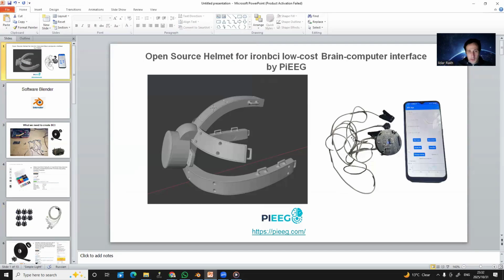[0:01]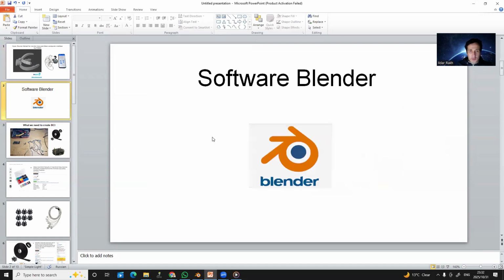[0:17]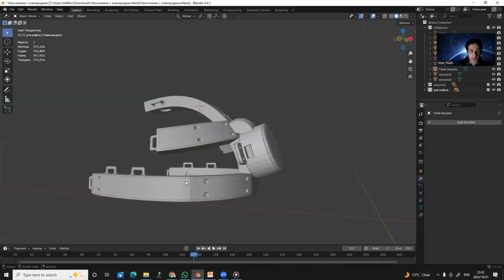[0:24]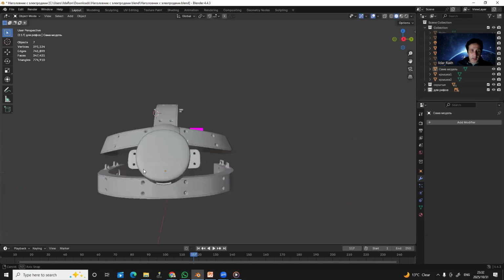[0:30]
So as you can see here, it's our helmet that I presented before for this Brain-Computer interface. It's open source for users of the IronBCI device. Originally it was implemented in Blender software, as you can see here. So let me explain how it was done.
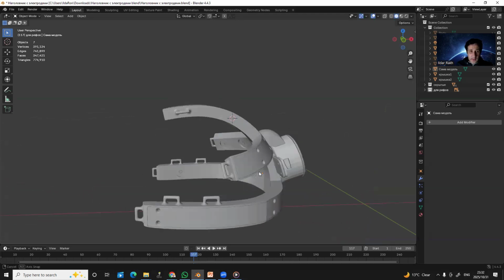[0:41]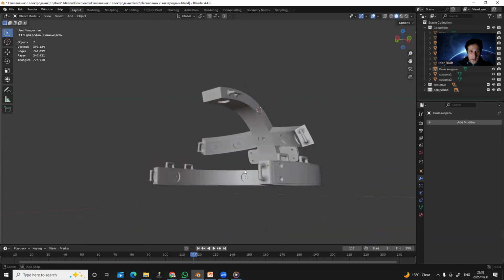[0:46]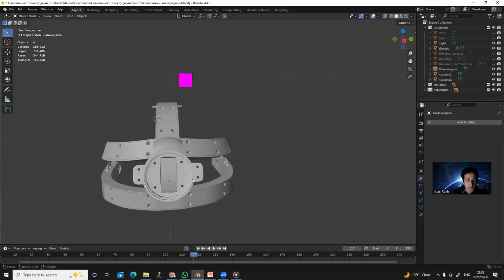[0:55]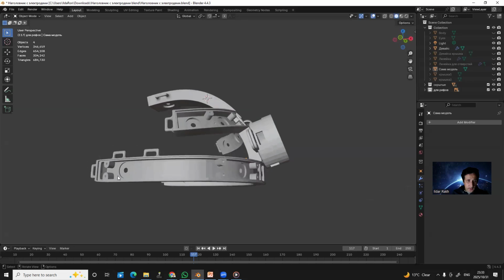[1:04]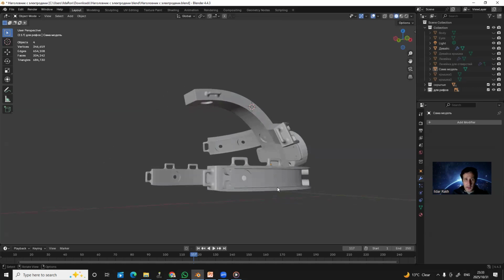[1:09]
The Brain-Computer interface is located in these parts. So you open this head, put the Brain-Computer interface inside, and after that the dry electrodes are already located here, and the connection is already implemented inside. So here it's located inside. And let me remove it. So here are places for cables and for putting dry electrodes inside, and it looks like that.
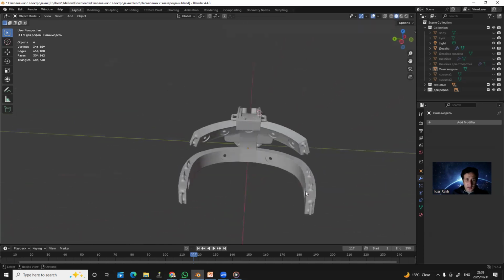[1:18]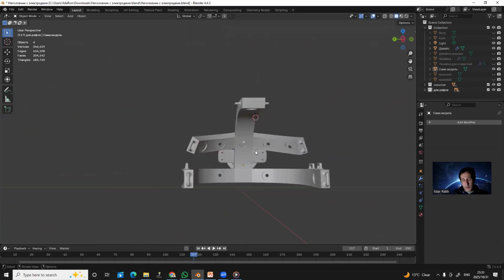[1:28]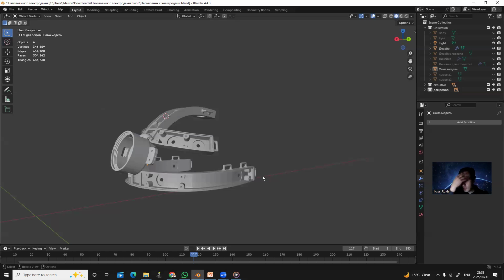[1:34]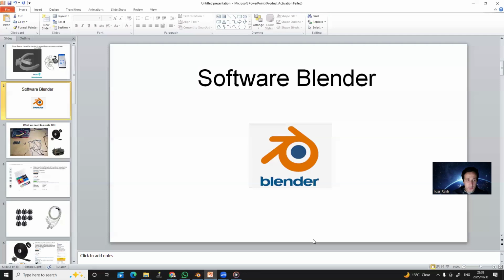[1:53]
These parts, as you can see here and here, are to adjust the flexible design of the headset, especially for the dimensions of your head. For these reasons, it's a more or less universal model. And of course you have every opportunity to adjust or change something, up to you, what you would like to improve or add as additional functionality. As I said, it's open source for IronBCI users.
And yes, of course, I provide sources for the headset, but anyway, we need some additional parts to make a working Brain-Computer interface. Of course, we need dry electrodes, and cables to connect the Brain-Computer interface and the dry electrodes. As you can see, I have used these types and some cables and these materials.
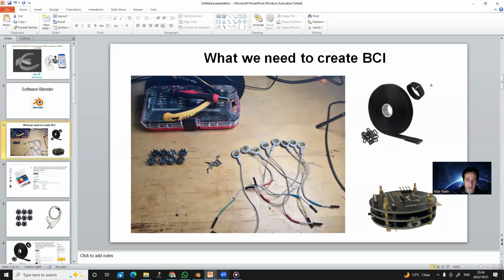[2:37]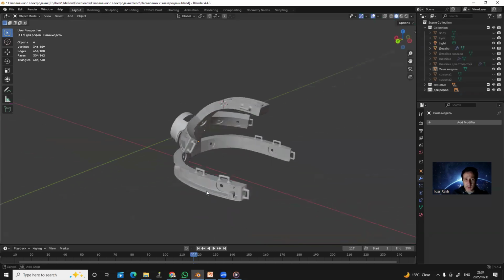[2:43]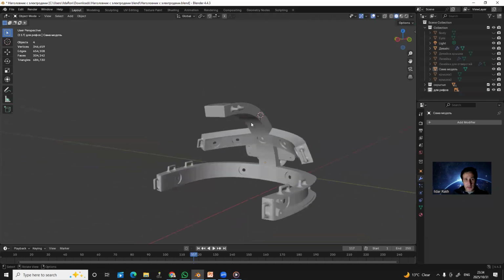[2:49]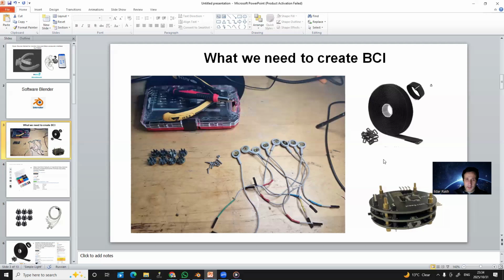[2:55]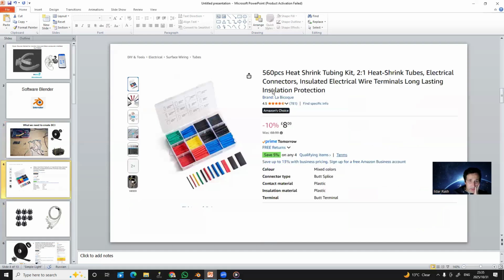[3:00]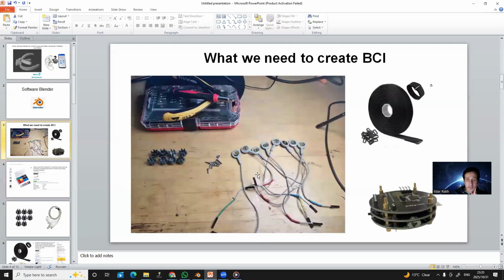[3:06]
Yes, as you remember, I mentioned that we need to have the opportunity to adjust the size of the headset, especially for your head, so it can be done with the next parts, but anyway, it's necessary to have these materials. So the next one that we need is heat tubes. Since it's not easy to find the optimal length for cables that can establish the connection between electrodes and the Brain-Computer interface, for this reason it's something that is necessary to do manually.
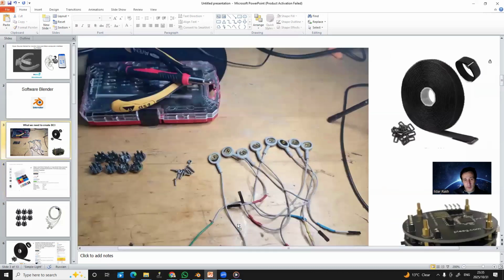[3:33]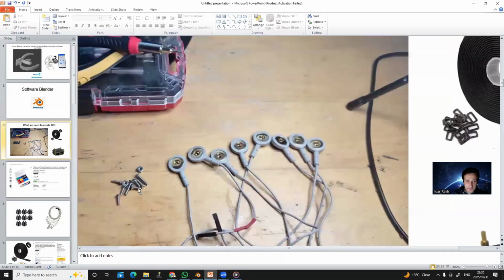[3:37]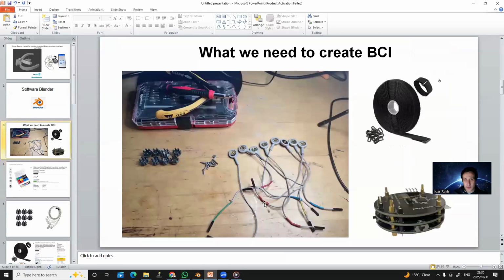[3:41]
I use this cutter, as you can see here, to take cables of standard length, cut them, make them shorter, and connect them manually. Probably here you can see it much more clearly. And use this material to protect it. Only then can you use some heater to fix it.
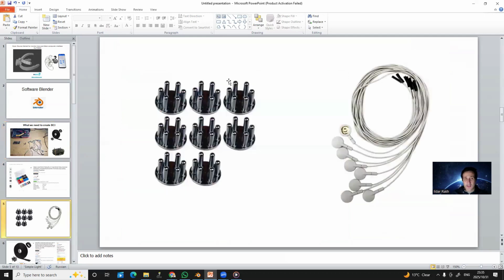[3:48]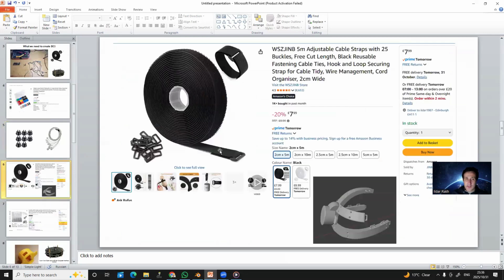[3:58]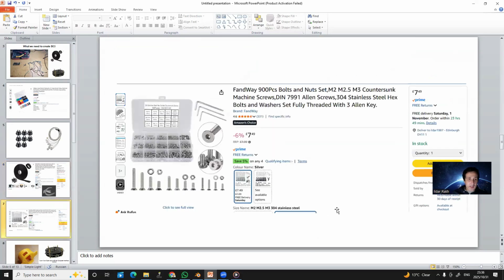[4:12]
So as I said, I used silver chloride dry electrodes and these types of cables to establish the connection between electrodes and the Brain-Computer interface. These cables, as mentioned before, are not so expensive and come in different colors. There are many different types, so it's up to you which ones to use. About which types of bolts can be used here, my recommendation is to just buy and use this kit. It is especially for adjusting and making all the connections, using M2 and M2.5, and also at a not so expensive price, you can find all of them, so you will not have any problems in this case.
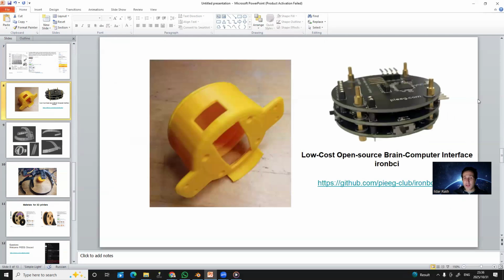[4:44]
So the Brain-Computer interface IronBCI is located inside this part. This holds it, this one, this one, this one, and this one. It's created to establish the connection between the Brain-Computer interface and the headset. So you need to take the BCI device and put it inside through this hole and one hole over here. It's to have the opportunity to turn on the device and also to connect the micro USB cable to charge the battery, a LiPo battery in this case, in the IronBCI device.
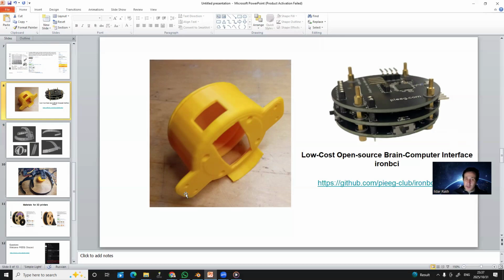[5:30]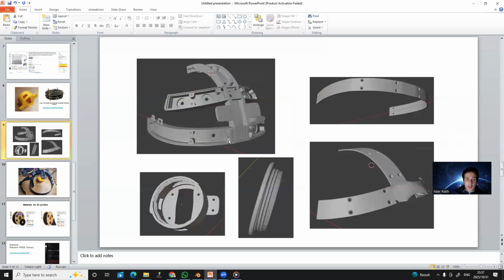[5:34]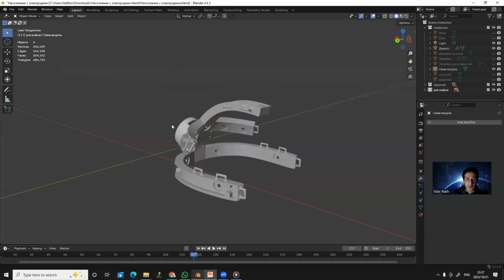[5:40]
So, yes, that's all. But here it became much clearer. It's the same as I showed before in the Blender files, but probably here it's explained much more easily.
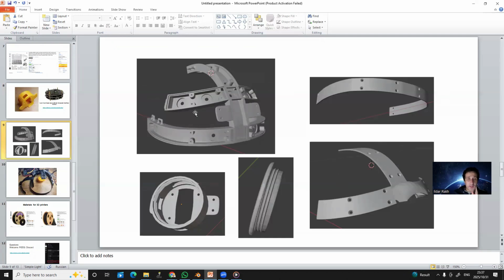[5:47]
So it was created from a few parts. It's mainly this one headset. Of course, it's a little problematic when we use, let's say, flexible materials to print this design on a 3D printer. We need to adjust and provide some flexible parts to have the opportunity to print this design via a 3D printer.
But it can be done. This one part is just a closure. Once it has been printed, you need to put electrodes inside, establish the connection between the electrodes and cables, and from this moment you can print this part and close it. This is possible for this area. After that, put the Ironbci brain-computer interface inside these parts, connect and close, and via the next cap, close these parts and put it over here.
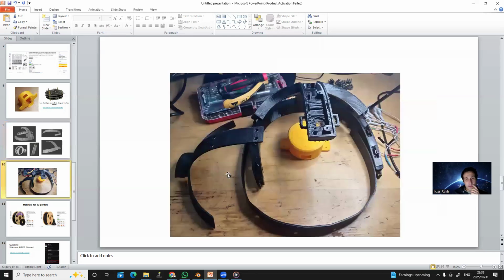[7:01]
So this is physically how it looks in real life, let's say. It was printed. This yellow part is for the brain-computer interface; you need to put the brain-computer interface inside. Here you put electrodes, connect the electrodes via cables with the brain-computer interface, and close.
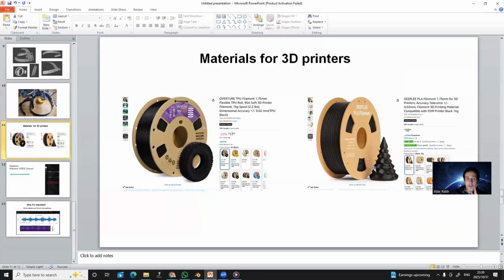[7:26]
So which types of material can be used? Of course, PLA or TPU. It also depends on what you would like to receive, since if it is a hard material, something like over here, and it is not made especially for your head, I created this one for my head, you will have some problem with good connection between electrodes and skin. It's quite sensitive in this case. But with flexible material, it's not so big a problem. So you can adjust. With this hard one, you can adjust probably only 4.2 millimeters, but it's not optimal.
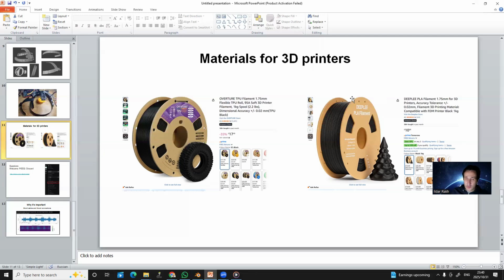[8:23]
So for this reason, you should choose: if you are confident that this dimension of headset suits your head, you can use some hard material. Or if you would like the opportunity to adjust, especially for your head, you can of course use soft material.
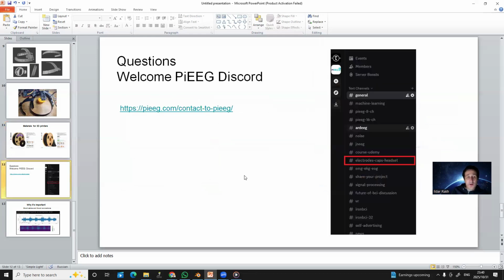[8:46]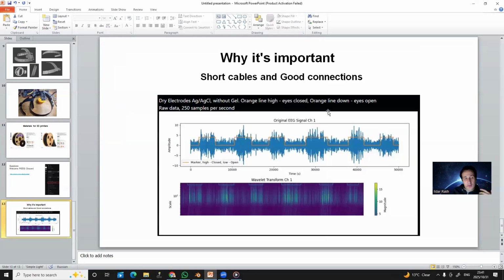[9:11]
And finally, what I would like to say is why the headset is so important. It's really important because when we use a headset, it means the data transfer is wireless. And the most important thing is that we have a very short distance between electrodes and the brain-computer interface. As you can see here, just a few centimeters, 90 millimeters. It depends, of course, on which types of electrodes, but anyway, it's very short. For this reason, we can avoid any electromagnetic noise in this case.
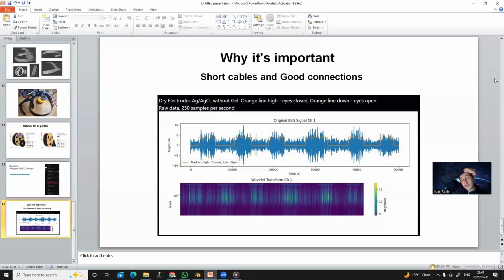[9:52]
And also, if you use some soft materials for the headset, you can very easily adjust and establish a good connection between electrodes and skin. That allows you to receive very clean data. As you can see in this image, it was alpha power. For testing this, my eyes were open and closed, and we can see that during the time when the eyes were closed, after a band-pass filter in the alpha range between 8 and 12 Hz, we can clearly see that without any gel. Again, I would like to repeat, with the electrodes, the alpha rhythm is very clearly visible.
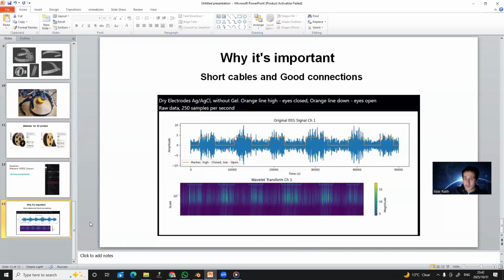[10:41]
So for this reason, of course, we should really pay attention to short cables and good connection. Especially in this case, if you have a good headset, it can significantly increase your opportunity to make much clearer, high-accuracy feature extraction. So from my side, that's all, and thank you so much.